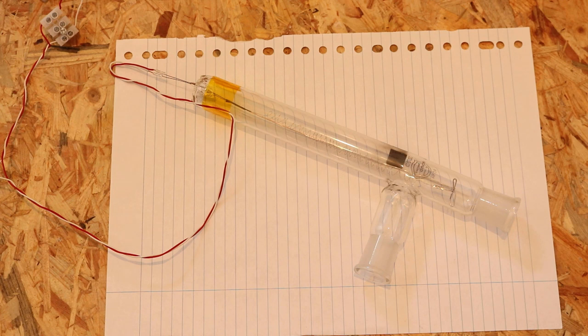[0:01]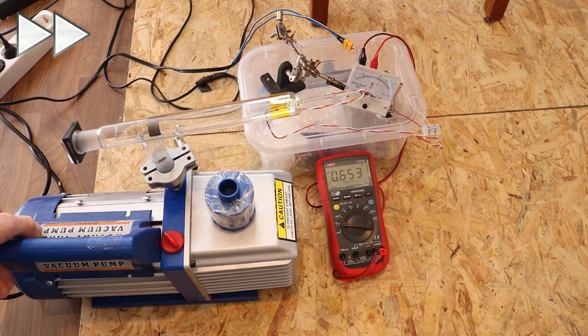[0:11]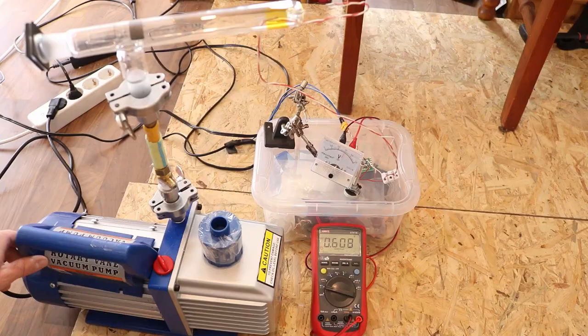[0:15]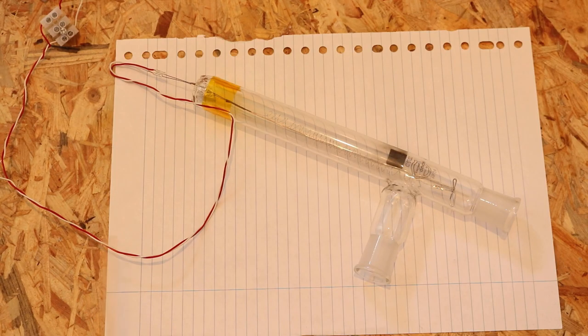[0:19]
In this video, I want to show how I made this homemade Pirani vacuum gauge. With that, you can measure vacuum relatively accurately, and I was even able to see how the pressure is increasing if too small of a hose is connected to the vacuum gauge and the restriction is too high.
The vacuum gauge itself is pretty simple. We just have a glass body, and in there we have a filament supported with some thicker wire. A Pirani gauge works by heating this filament by letting a current flow through it, and depending on the pressure, the heat conduction from the filament to the gas that's in here will be different, and the wire has a
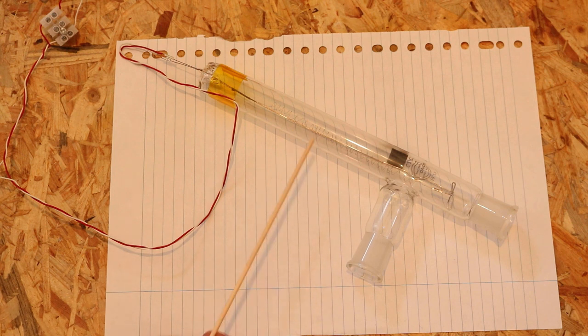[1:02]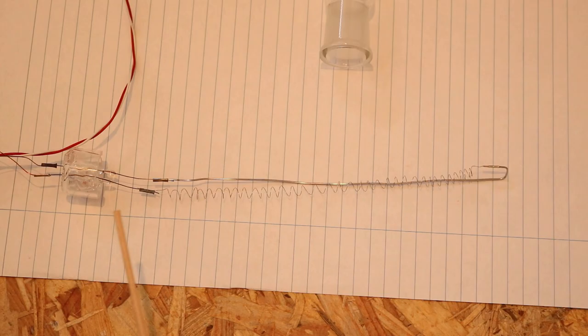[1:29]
resistance, and this resistance is dependent on the temperature, and the filament will be hotter if there's less gas to conduct the heat away from the filament, and therefore its resistance will change. And that's what we can measure, and that's relatable to the vacuum inside this glass body.
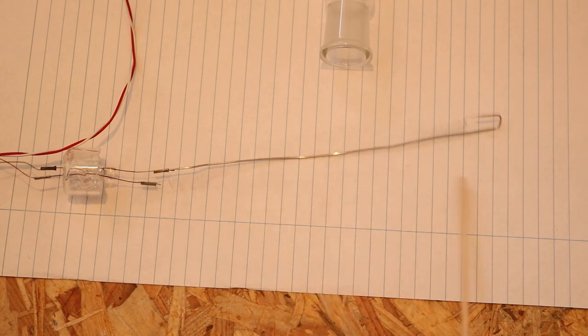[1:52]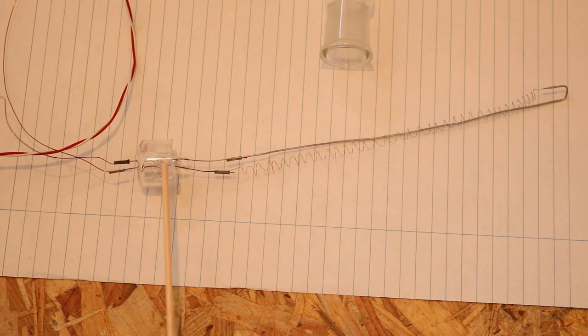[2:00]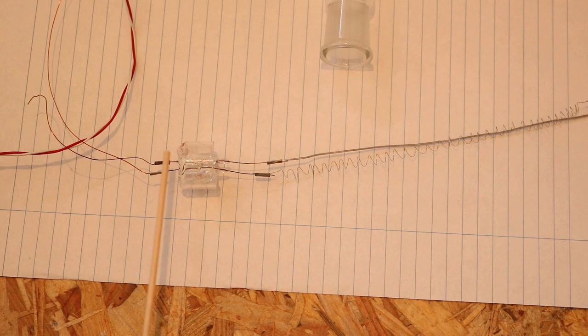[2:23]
This is the whole thing without the glass body, and this is a stainless steel wire. It's 56 centimeters long and 0.1 millimeters in diameter, and this is supposed to have 24.6 ohms. The filament is coiled up and then supported here with the thicker stainless steel wire, and I have the contacts melted into this glass. This is not that easy, so it's probably simpler to use stainless steel tubing and just glue it in, isolating with epoxy. That's probably easier because I melted the glass and melted the tungsten in here, and it's vacuum tight. That's not that easy.
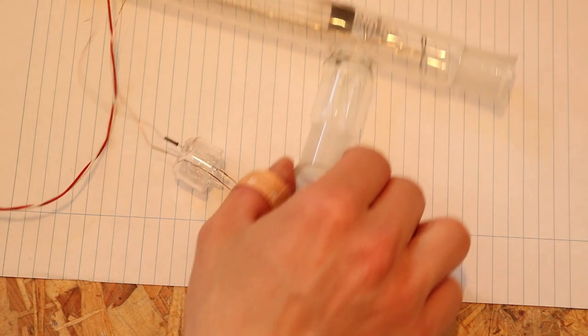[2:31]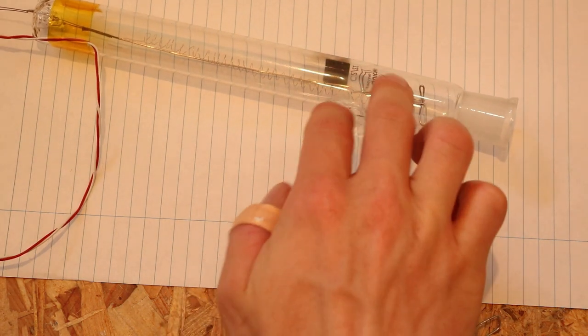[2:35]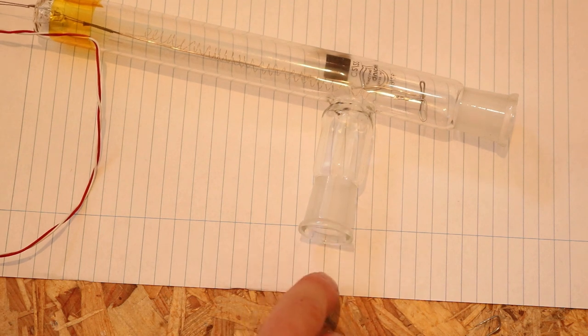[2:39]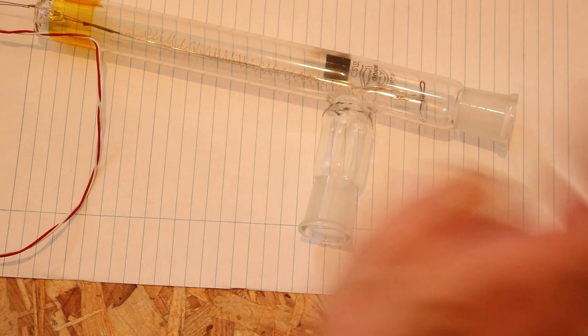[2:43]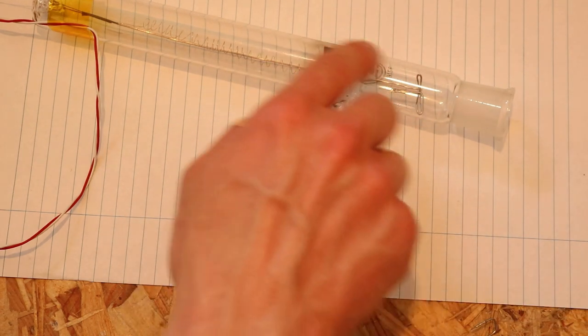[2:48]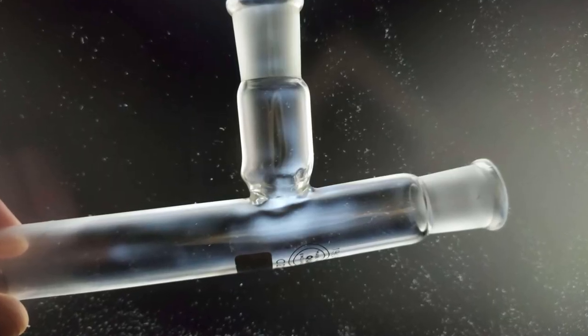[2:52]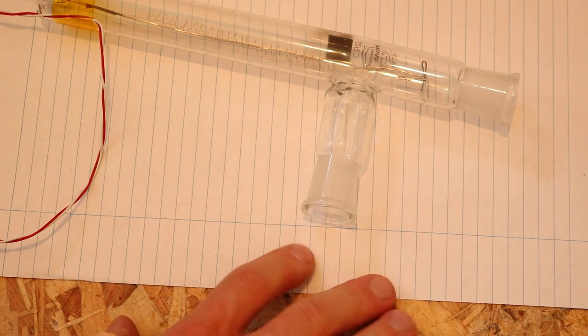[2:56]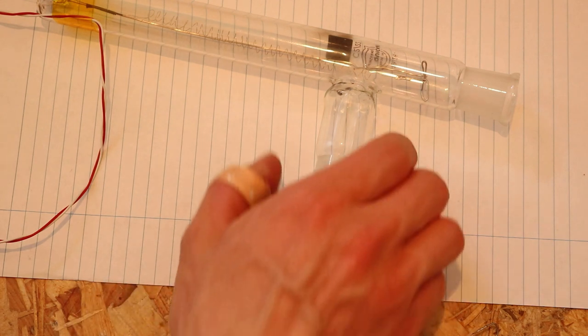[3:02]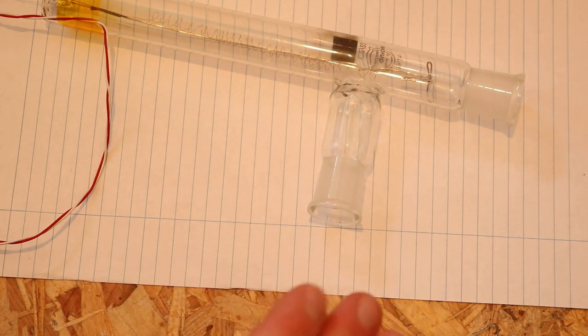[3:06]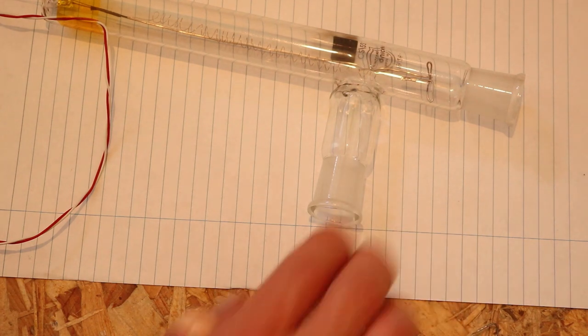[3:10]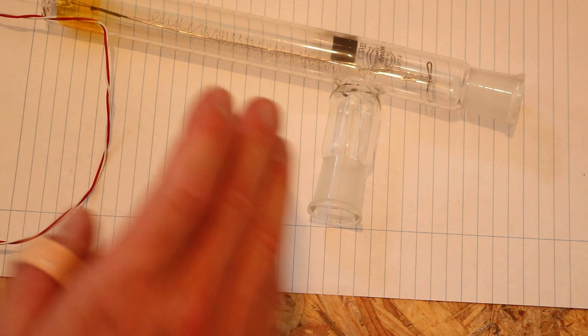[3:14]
Also, I had this glass body and melted two pieces together to have a T piece, one connected to the vacuum pump and the other connected to whatever you want to connect to it. And I didn't get the stresses out of the glass in this area very well. So it might implode if it's connected to the vacuum pump. The glass is pretty thick, but it's still not great if it's not completely annealed and there's still stress in the glass. So it's probably better to have this constructed out of tubing, some stainless steel tubing or something like that.
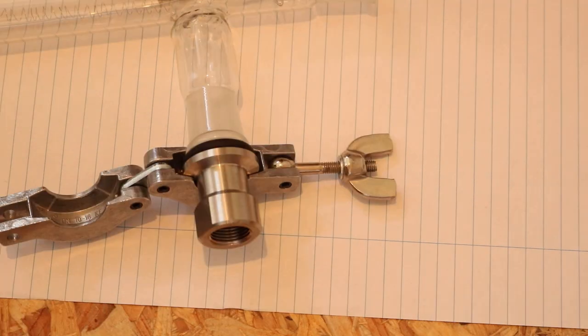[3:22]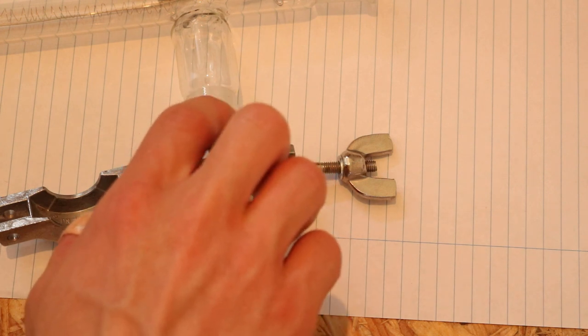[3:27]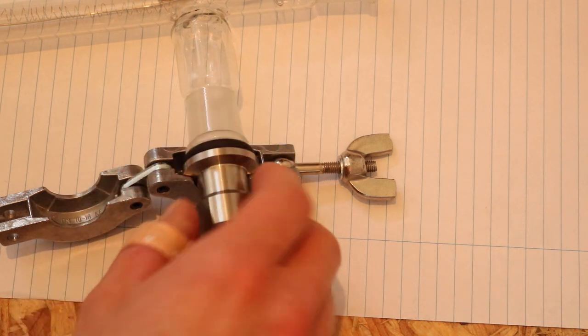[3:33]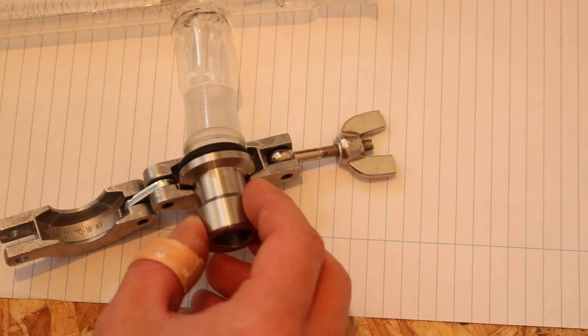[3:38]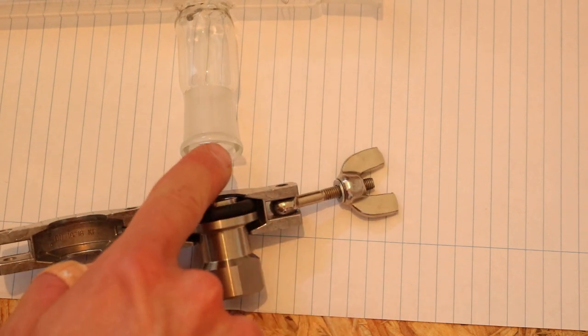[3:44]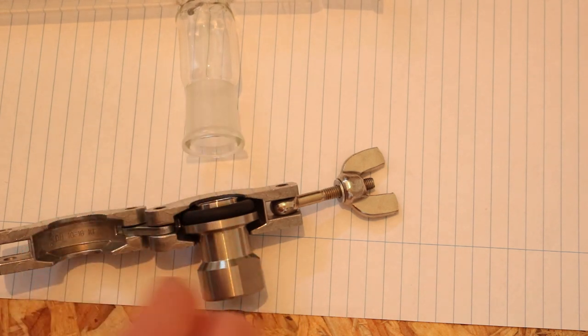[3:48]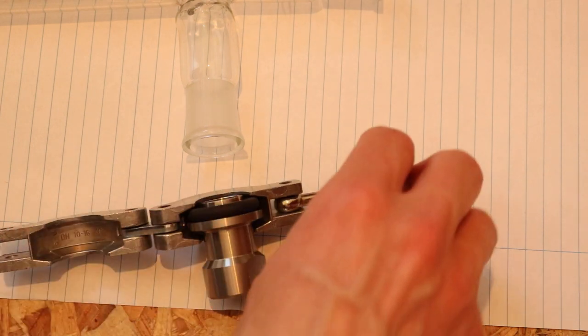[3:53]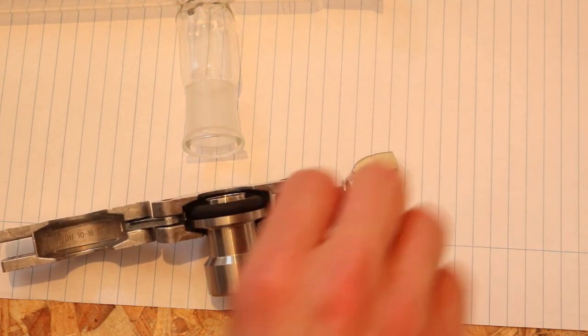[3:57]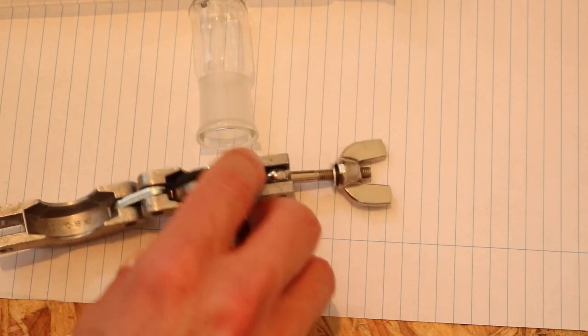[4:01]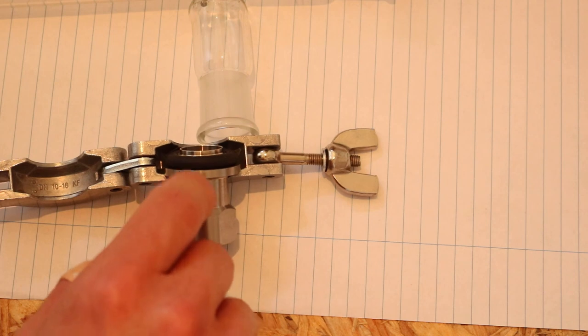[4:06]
I also made it out of this laboratory glassware because it has these ground glass joints, and that's a 19/26 ground glass joint. And I found out that you can connect these to these KF16 vacuum connectors. What you have to do is grind a little bit off this lip. It works without, but then this clamp is not closing all the way, or you have to make this screw longer to make it close. So I removed a bit of this lip, and then it's perfectly fitting on this KF16 vacuum connector.
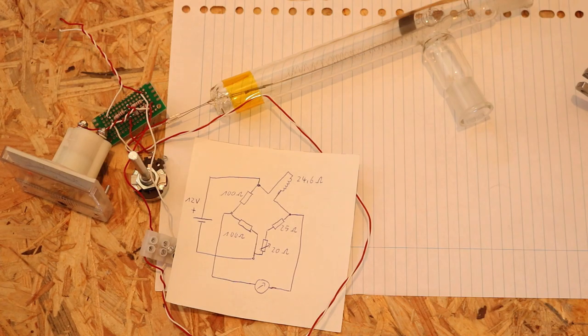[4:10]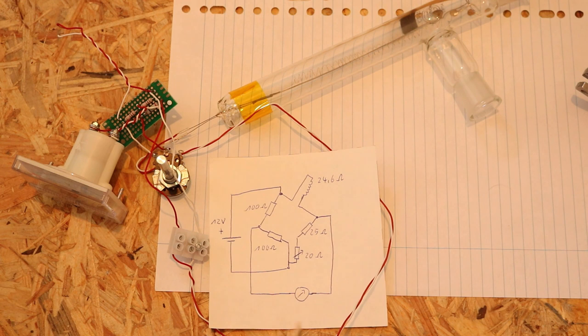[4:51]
Now to the electronics. I talked about heating this filament and also measuring its resistance, and that's done by this circuit. That's a Wheatstone bridge. The plans for the whole thing are from a website, and I'm going to link this in the description as well. We have two 100 ohm resistors, then up here's the filament with its 24.6 ohms, then a 25 ohm resistor, 1 watt, and a potentiometer. That's this thing, also at least 1 watt. I think this one is 2 or 3 watts. And the whole thing gets supplied by 12 volts.
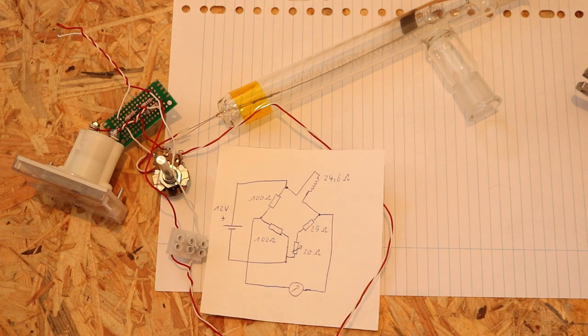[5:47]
Then we measure the voltage at these two points, and the website tells you to adjust the voltage to 0.660 volts, and it has a table where it relates the vacuum level to the voltage. How accurate this is, I don't know, because obviously we don't exactly have 24.6 ohms if we build this. So that's a bit of a problem. We can only measure the voltage. We would need to calibrate this ourselves to know exactly if a certain voltage is a certain level of vacuum. That's one problem of this.
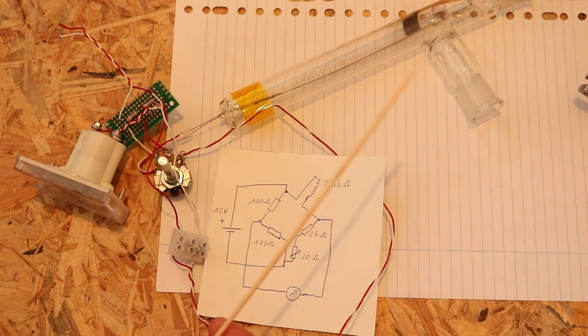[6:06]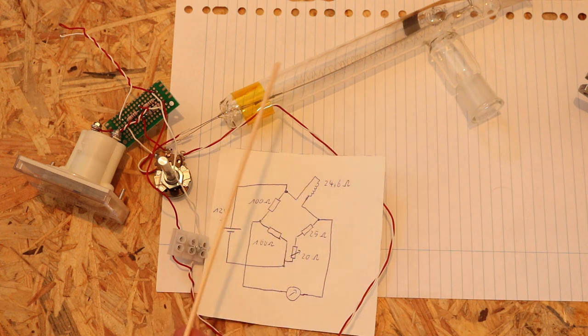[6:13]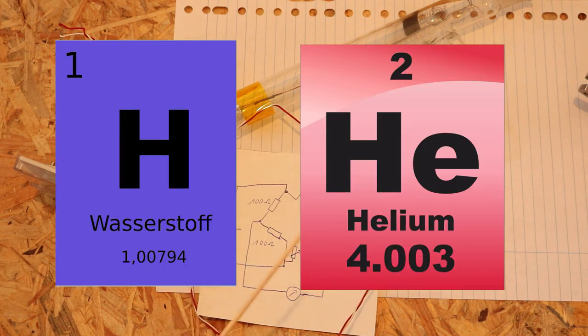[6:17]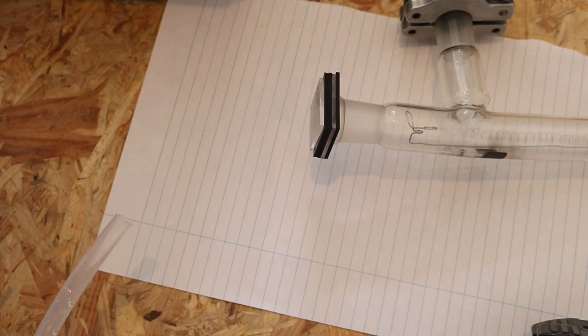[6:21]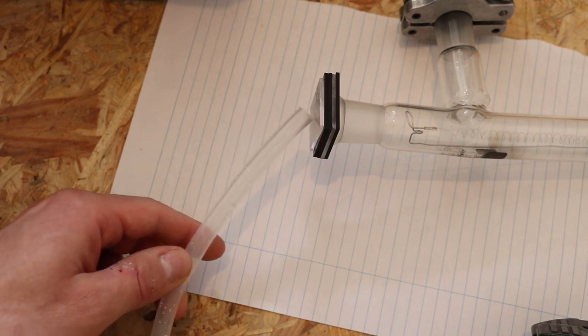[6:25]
But what you can in theory do is leak detection with this, because the filament in here is dependent on the heat conduction of the gas inside. And two gases have a higher heat conduction, or thermal conductivity, than air or nitrogen, and that's hydrogen and helium. And I tried it out. I poked a little hole in a piece of plastic and put some hydrogen in, and you can see the gauge is rising. I don't think that's super sensitive, so I don't know how practical this is, but it's pretty
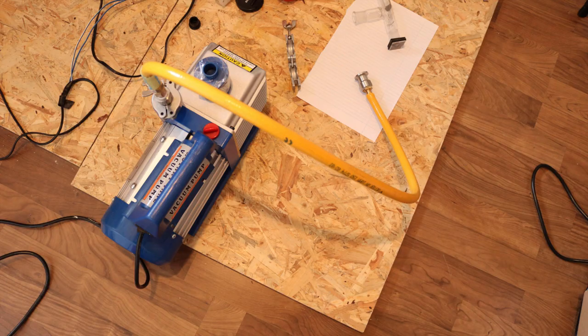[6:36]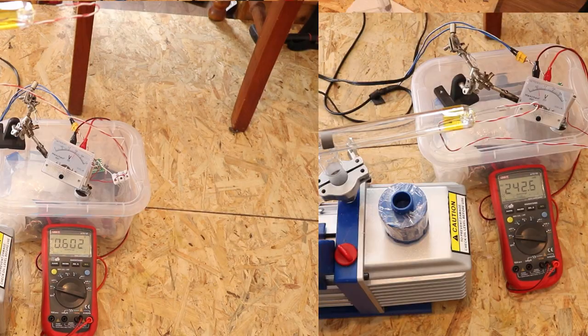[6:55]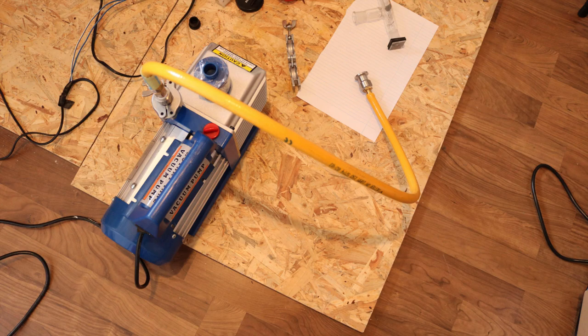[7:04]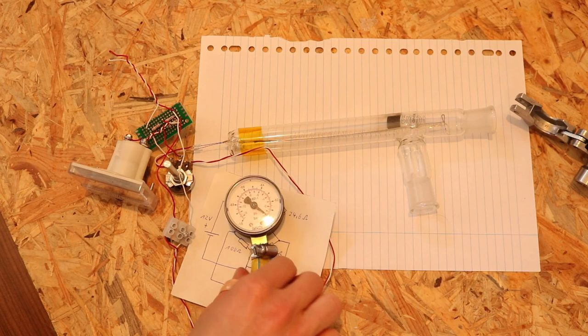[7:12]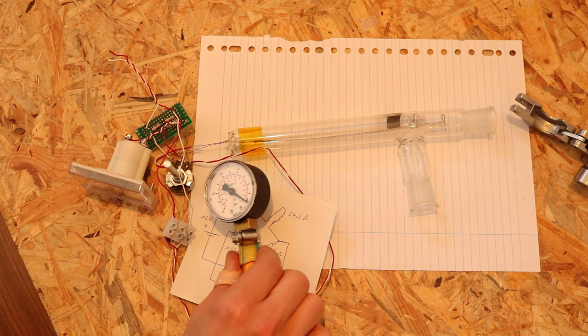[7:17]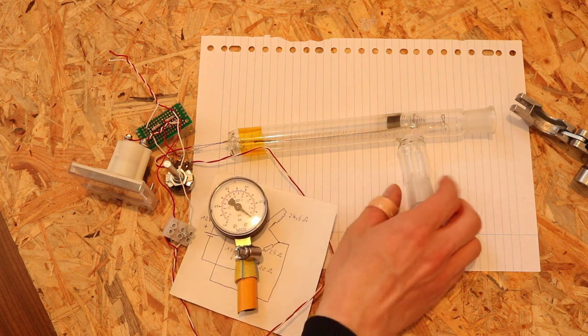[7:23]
interesting. Also, in the beginning, I was a bit afraid to connect this thing to my vacuum pump directly because of the implosion risk, and I connected it with a pretty thin, small hose, and the pressure was pretty high. Compared to the pressure if it's connected to the vacuum pump directly, it's much higher, and that's due to the restriction of this hose that's way too thin for these vacuum levels. I'm pretty sure the difference in pressure with a hose and without the hose is not noticeable by a vacuum gauge like this. And this thing is certainly more accurate, just from the fact that you can read it off with a multimeter as a voltage.
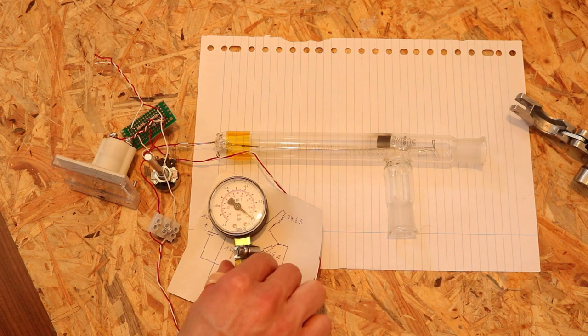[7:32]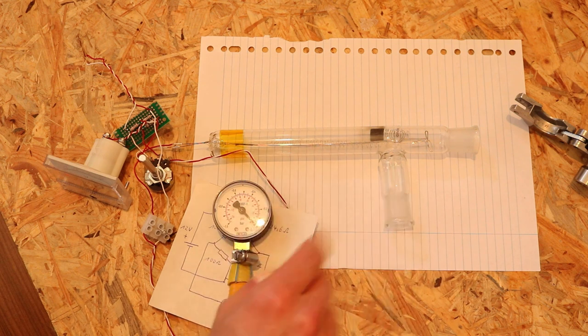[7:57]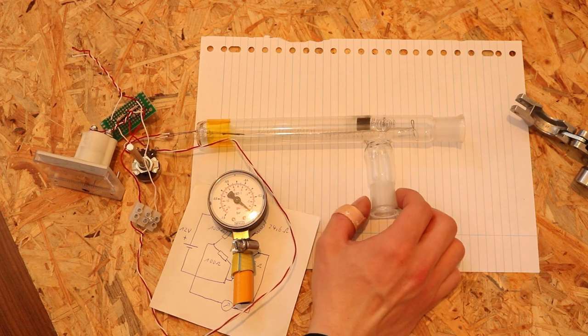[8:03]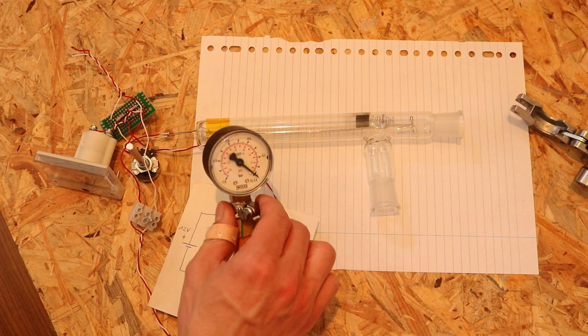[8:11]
But also, this is pretty inaccurate. So I may build this permanently with stainless steel tubing. I'm not sure yet. But this thing is pretty good just from building it at home. And maybe I can someday get this more or less calibrated and have an actual vacuum level readout with this. But it's pretty cool that you can build something like this yourself, which is usually much more expensive. And even the self-made version is potentially more accurate than these normal gauges you can get.